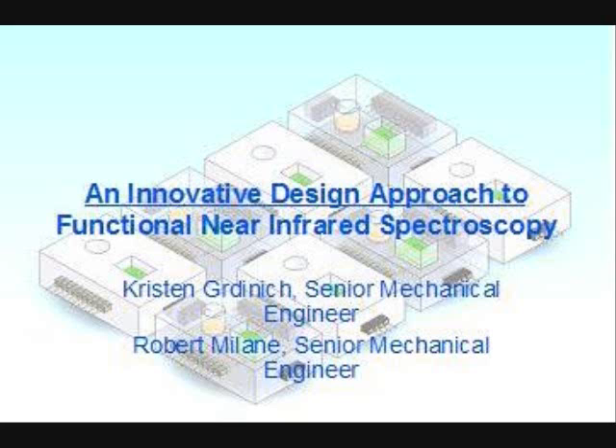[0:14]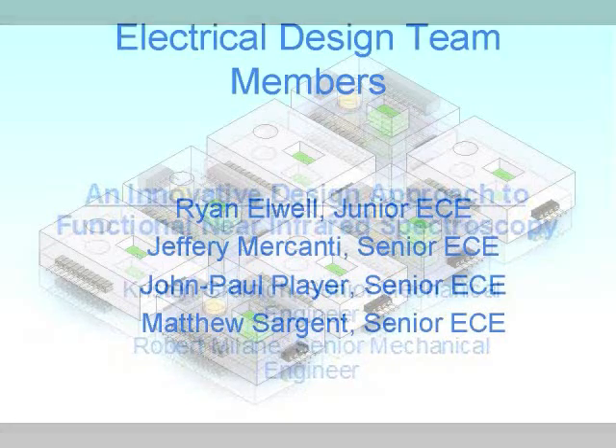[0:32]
This video was created to present our junior-senior clinical design project at Rowan University. My name is Robert Mullane. I am a senior mechanical engineer. And I am Kristen Grinich, also a senior mechanical engineer at Rowan University. And we are the mechanical design team for the functional near-infrared brain imaging project.
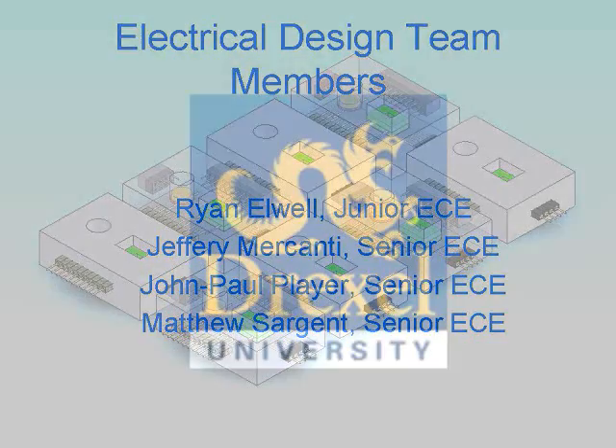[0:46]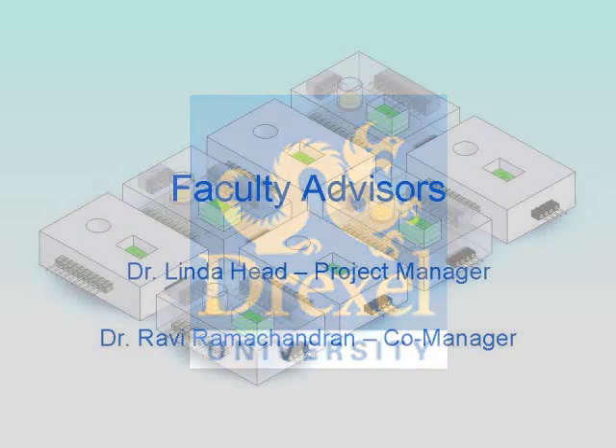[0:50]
Our project was a joint effort with an electrical design team that included Ryan Elwell, junior ECE, and senior electrical and computer engineers Jeffery Mercanti, John Paul Player, and Matthew Sargent. This project was also run in conjunction with a design team from Drexel University. Our faculty project manager is Dr. Linda Head, with co-manager Dr.
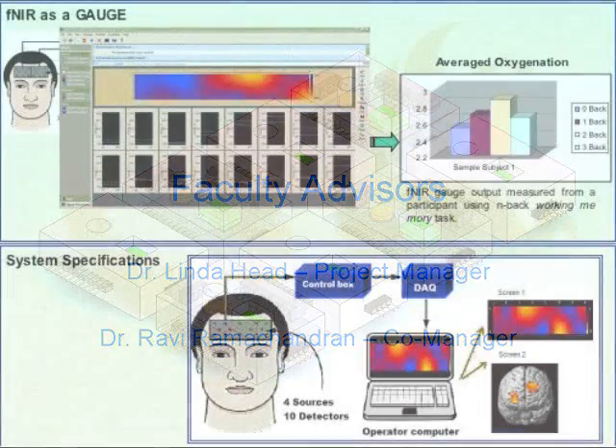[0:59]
Ravi Ramachandran. The device uses near-infrared light LEDs to shine light through the skull and into the brain while the test subject is actively involved in cognitive activity. The light is absorbed by any hemoglobin present in the brain, and the light that is not absorbed is reflected back to the receiver diodes. This signal can be translated by software into an image that shows the amount of hemoglobin in the brain.
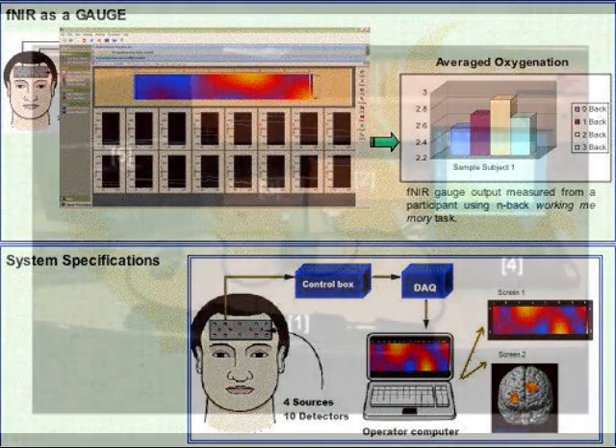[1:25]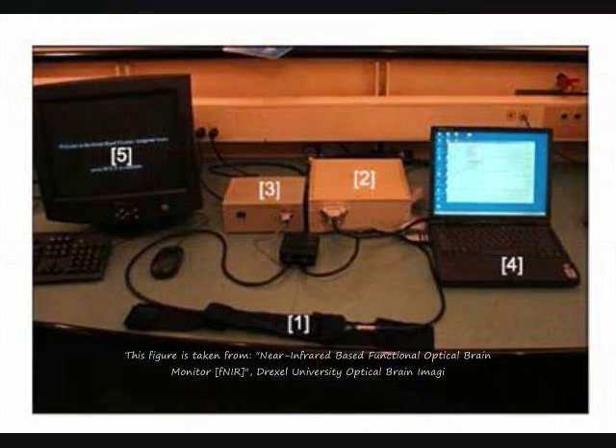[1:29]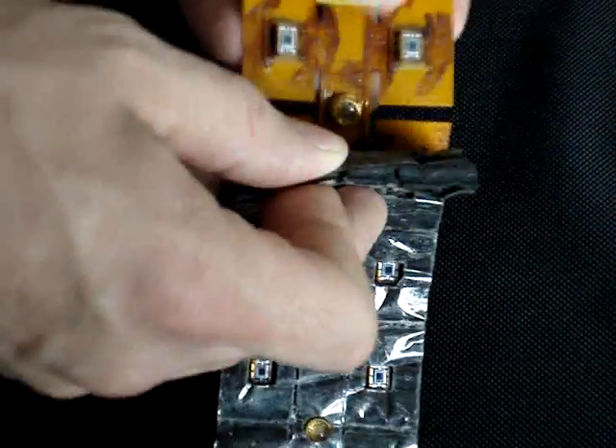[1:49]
Currently, this technology is used by the government to help determine how soldiers handle different stressful situations. The presently available device requires that the test subject be seated in front of a computer while testing takes place. This is because the headgear has to be directly connected to the computer, as represented by the number 1 in the setup shown. The headgear apparatus is hardwired as one unit, as seen here, after removing the protective foam layer.
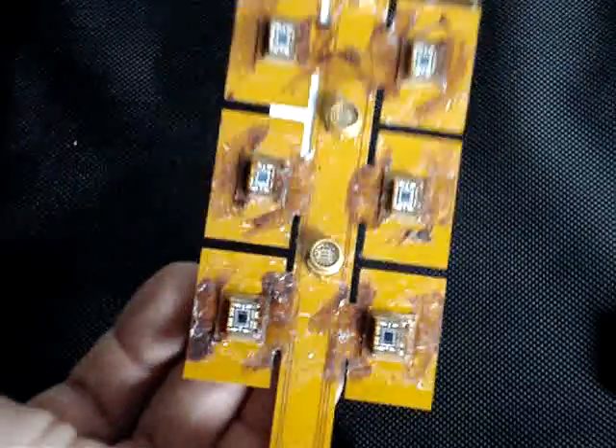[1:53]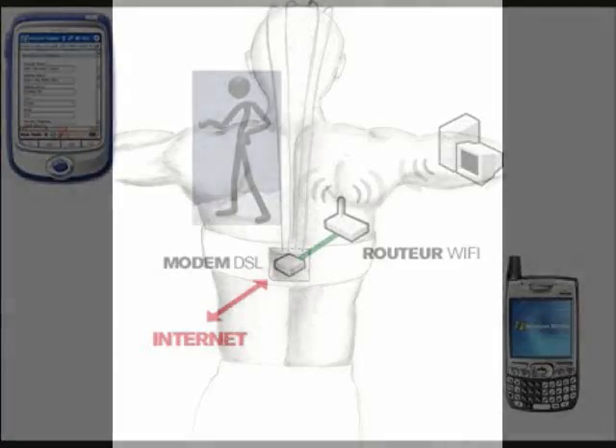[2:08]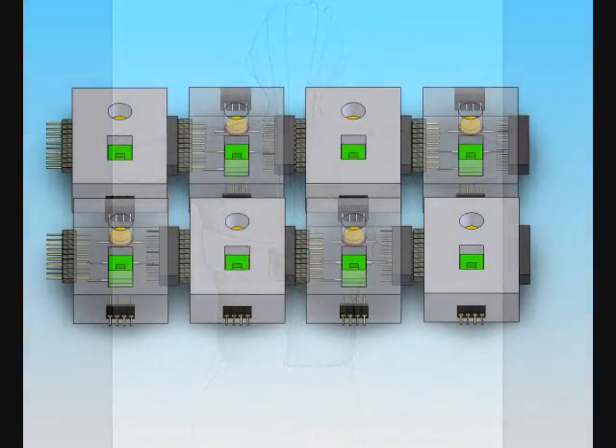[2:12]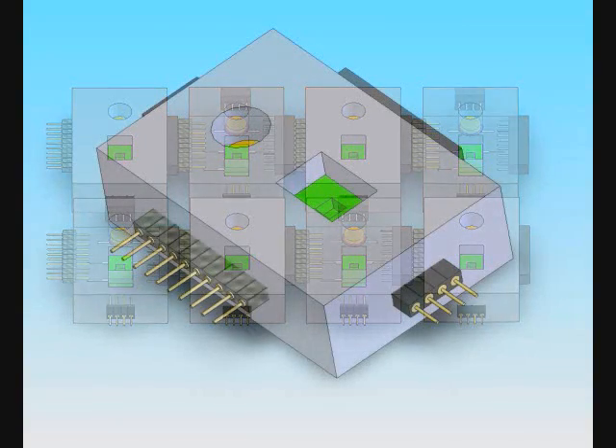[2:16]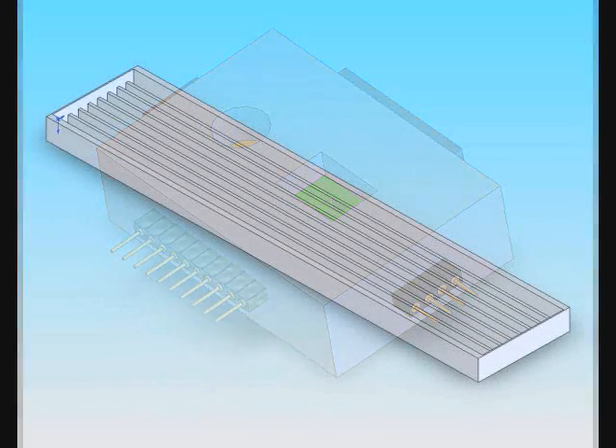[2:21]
The main objective of this project is to make an improved device that is mobile to allow a test subject to complete physical as well as cognitive activities while wearing the unit. The second major goal was to make the unit modular to allow for different size subjects as well as different LED and diode configurations. Our first design was to be made using a mold that would create slots in a
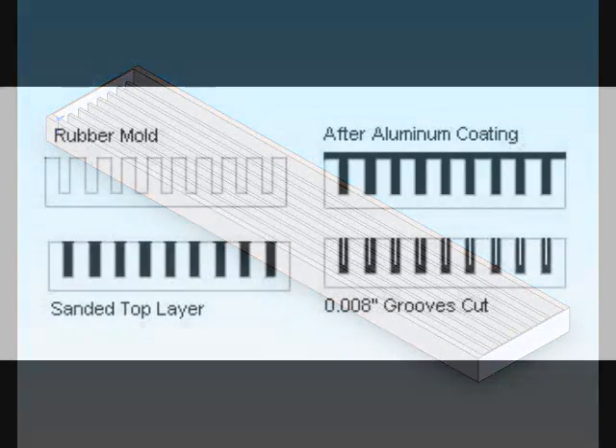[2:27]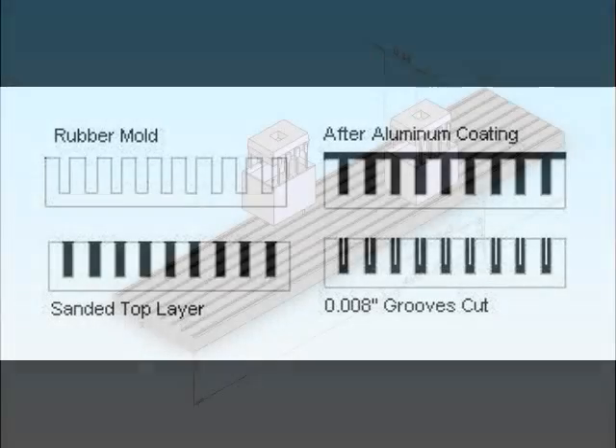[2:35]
rubber housing. The slots would then have metal evaporated in them, and small grooves would be cut into the metal using a 0.008-inch jeweler saw. The diodes and LEDs would then be put in small rubber boots to block ambient light and then could be placed anywhere on the slotted housing.
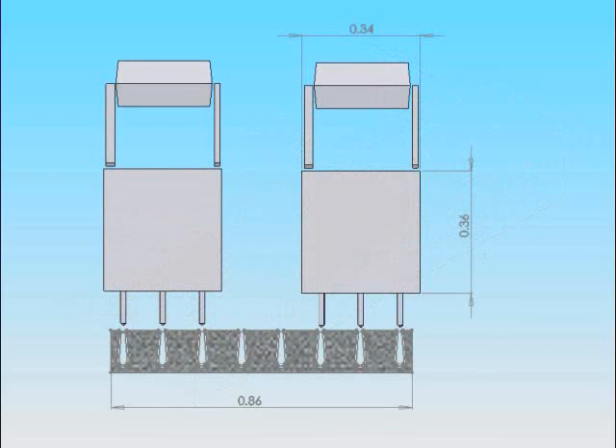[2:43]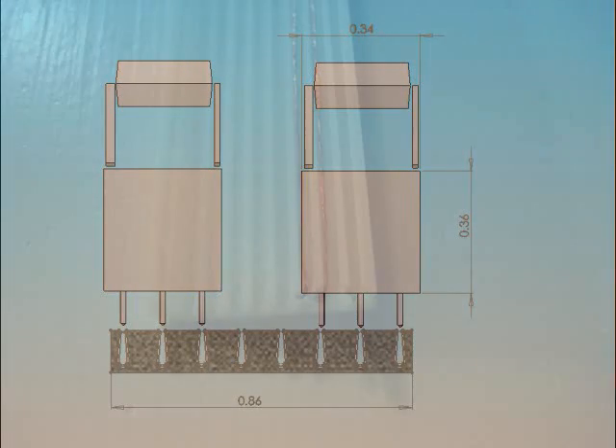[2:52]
The aspect ratio proved to be too small to allow for metal to be evaporated into the grooves, so we needed to evaluate different alternatives. One idea was to use wire embedded into the rubber during the molding process, but this configuration proved to have excess electrical noise during the testing stage and was also scrapped.
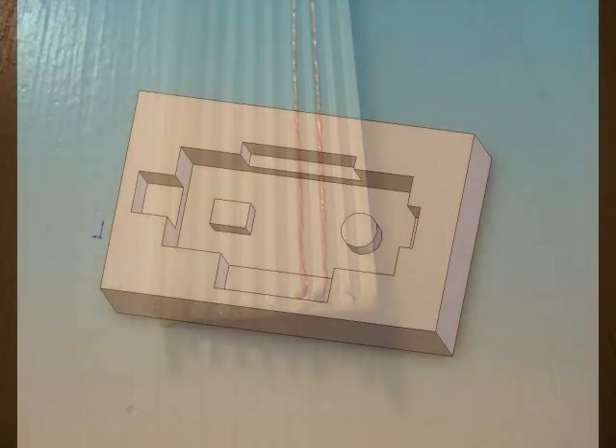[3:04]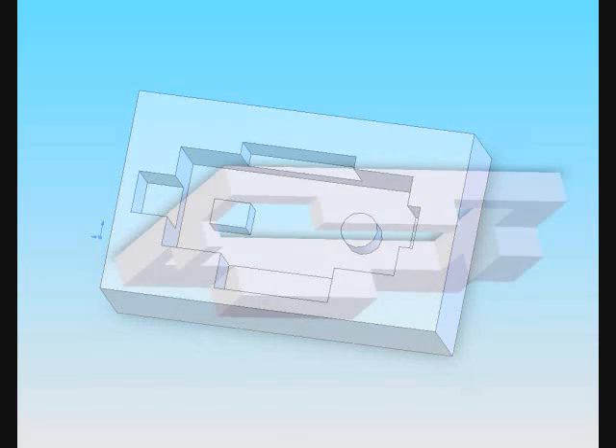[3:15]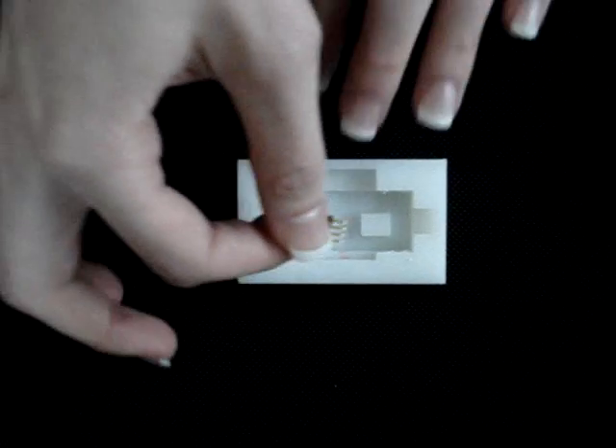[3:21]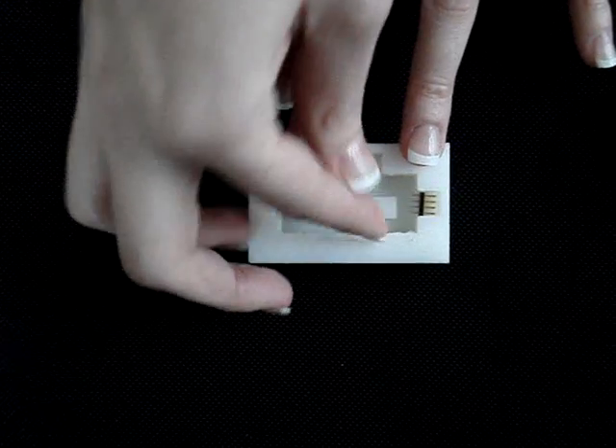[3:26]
After some team brainstorming, it was decided that we would create a mold, shown here from SolidWorks, that would house one LED and one diode, and would be wired to 4 connectors, 2 male and 2 female. This would allow for multiple configurations, quick setup, low or no electrical noise, and less costly repair.
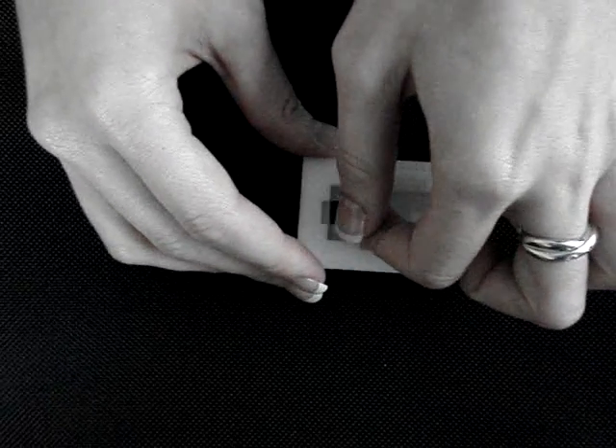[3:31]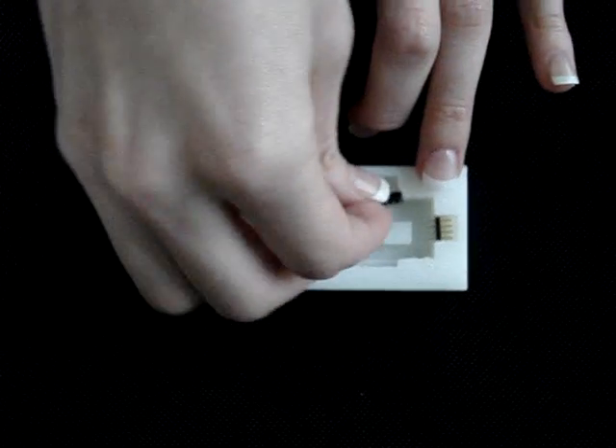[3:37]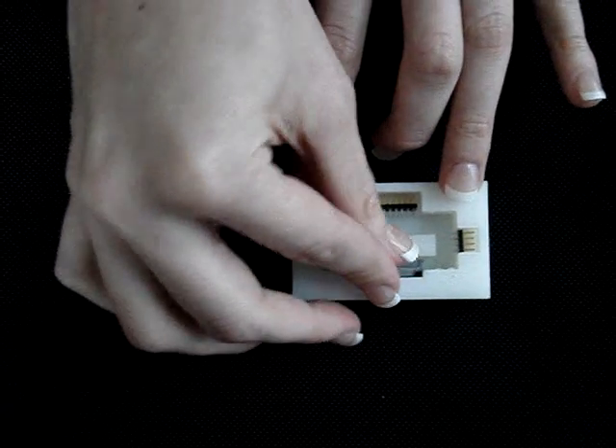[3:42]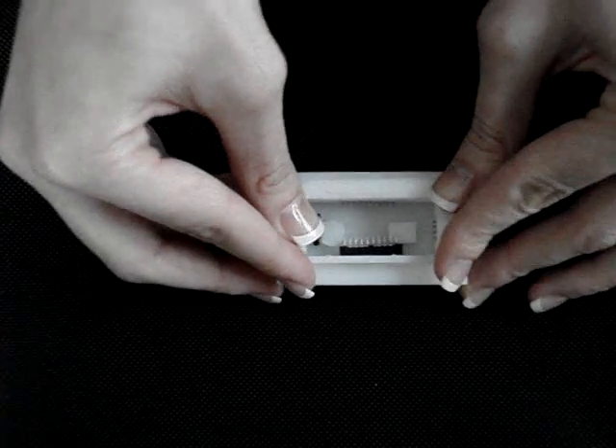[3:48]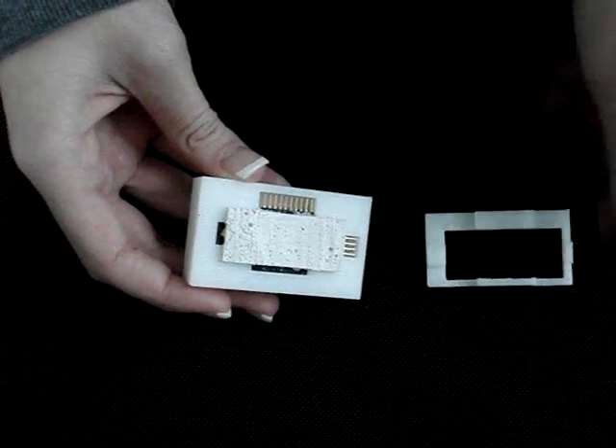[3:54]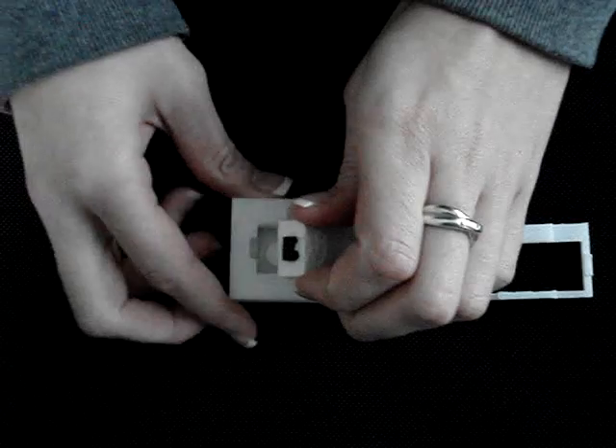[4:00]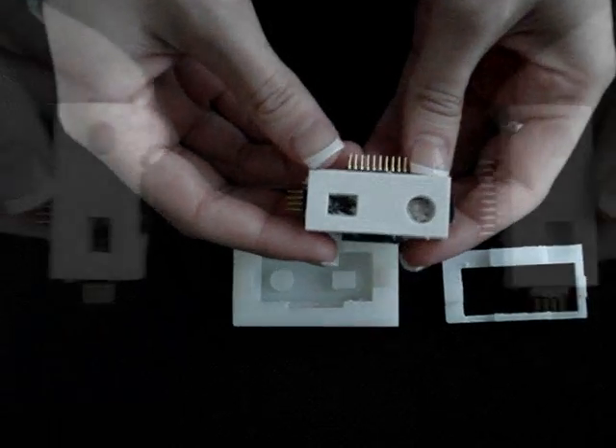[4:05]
You can see here how each connector is inserted, and then the top is put in place to hold everything still while the rubber that will be injected into the mold has time to set. Once the rubber is set completely, the unit can be removed from the mold. It can be seen here, using 2 prototype parts, how they could be connected to form different configurations.
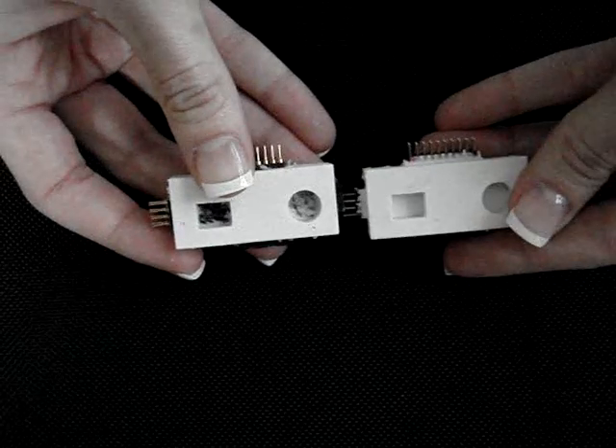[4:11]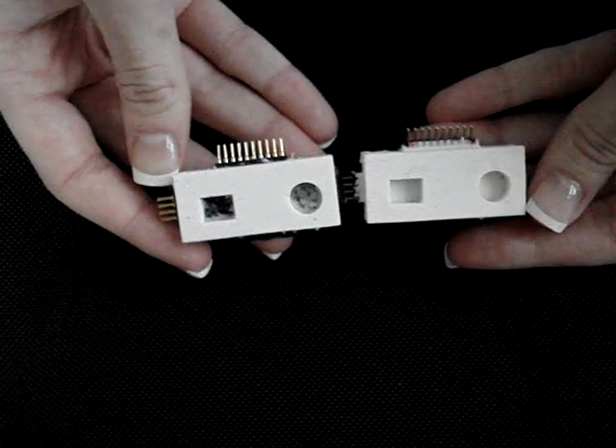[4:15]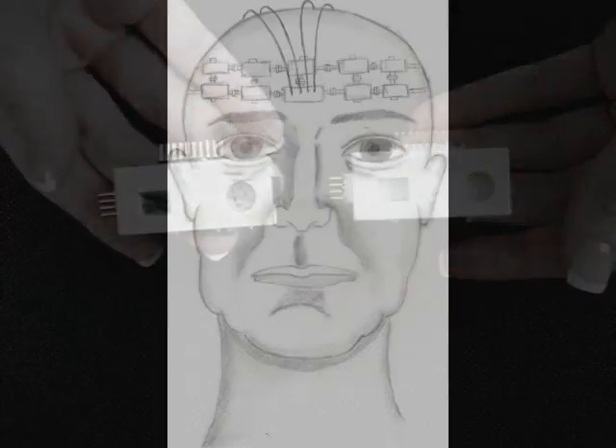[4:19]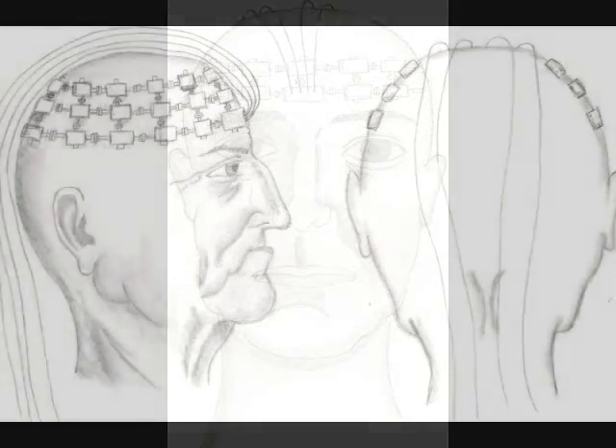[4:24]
From these artistic renderings, you can see how, theoretically, any size device can be made, even one that would cover the entire head.
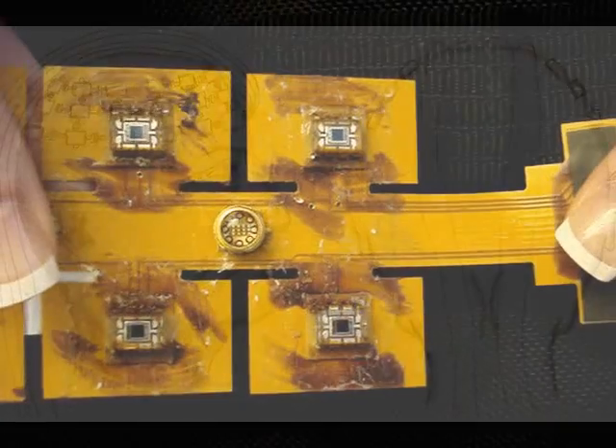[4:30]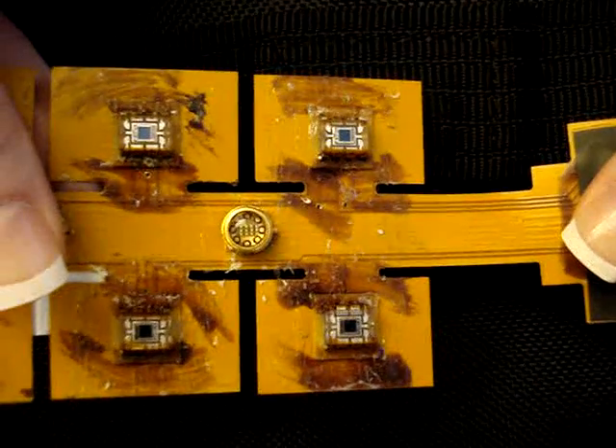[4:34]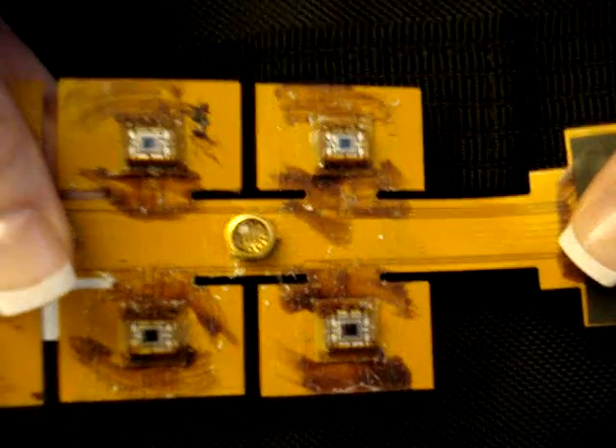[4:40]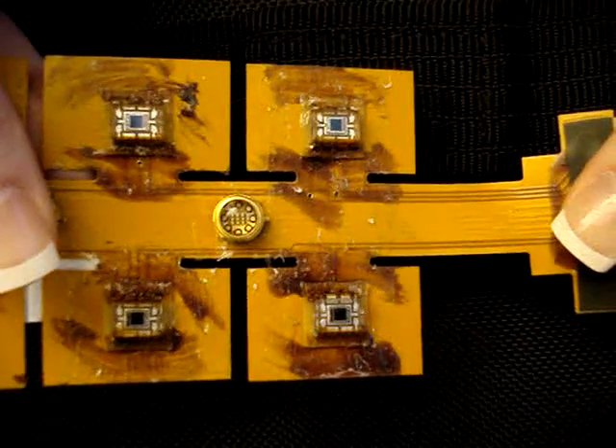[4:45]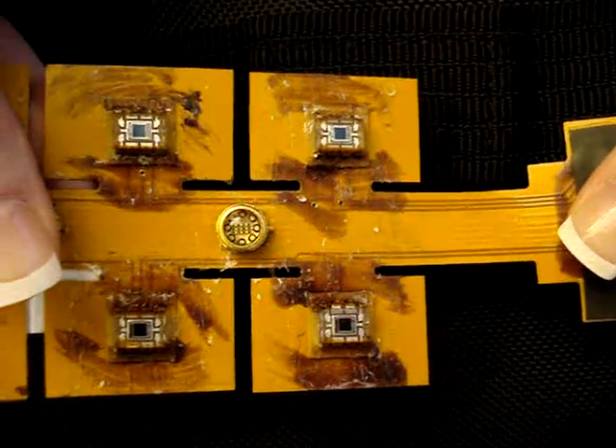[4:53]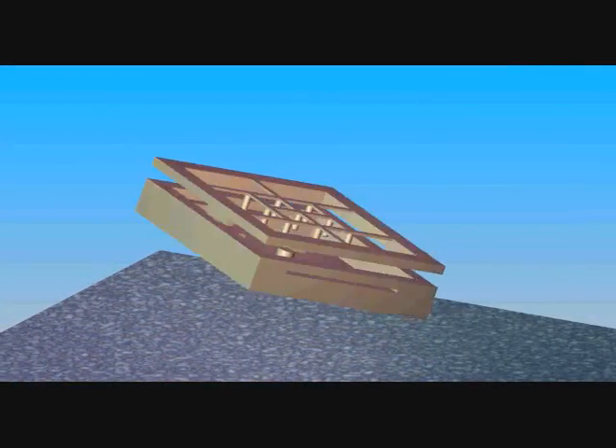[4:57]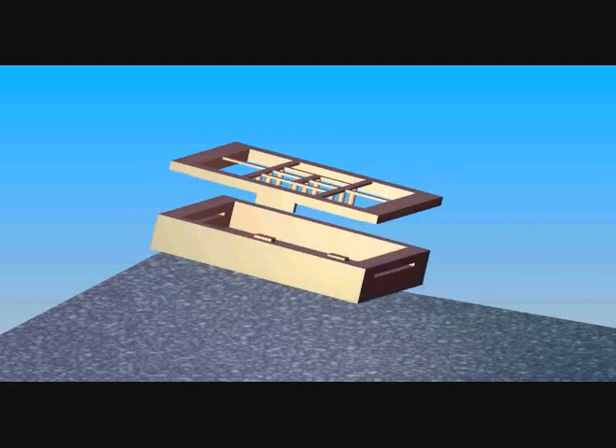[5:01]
At this point in the project, we were contacted by Drexel and told they were designing a single unit consisting of one LED and 4 diodes positioned with the LED in the center and each diode 3 centimeters from the LED in a square configuration. A hardwired version is seen here. After putting the single prototype on hold, we changed gears and created a design in SolidWorks along the same lines, only fitting the new requirements.
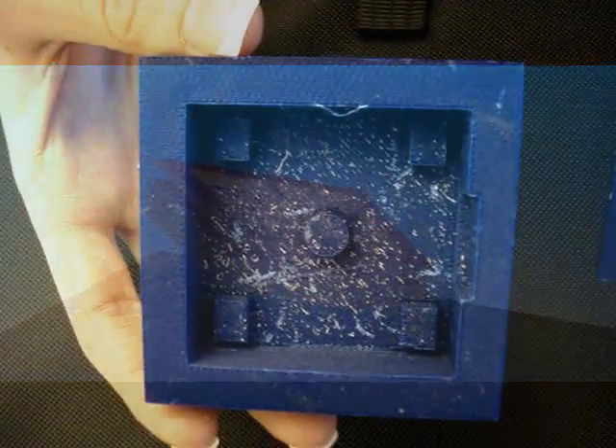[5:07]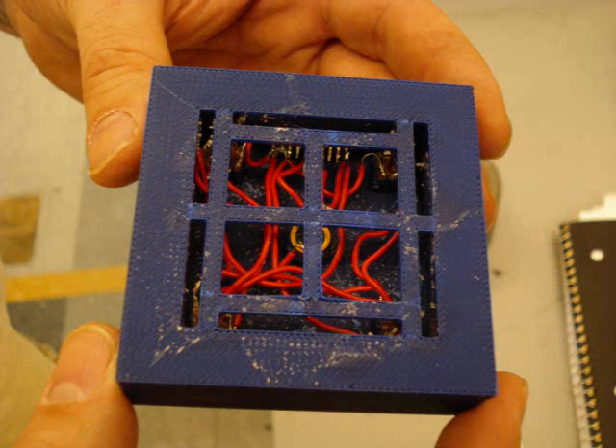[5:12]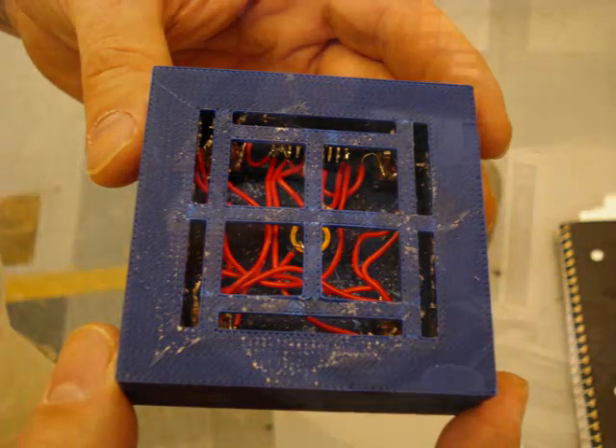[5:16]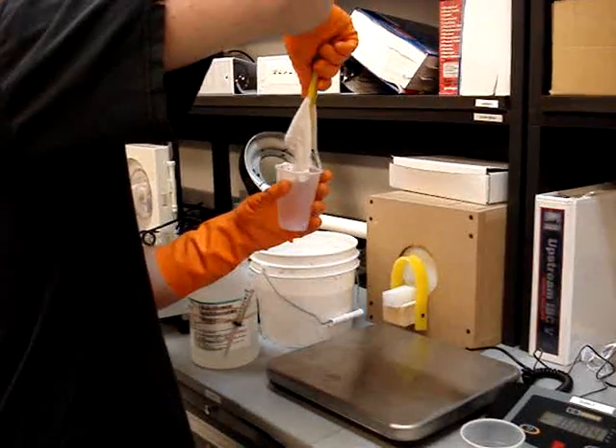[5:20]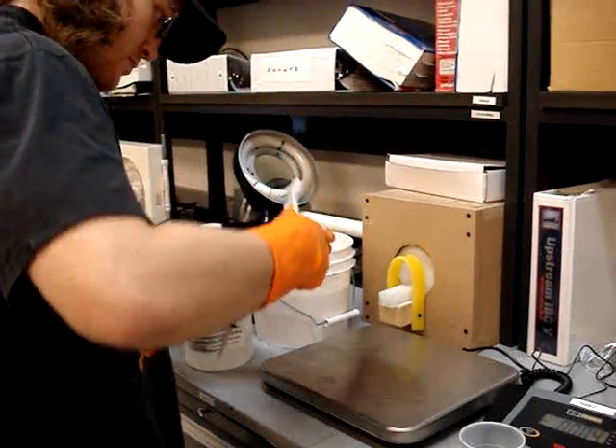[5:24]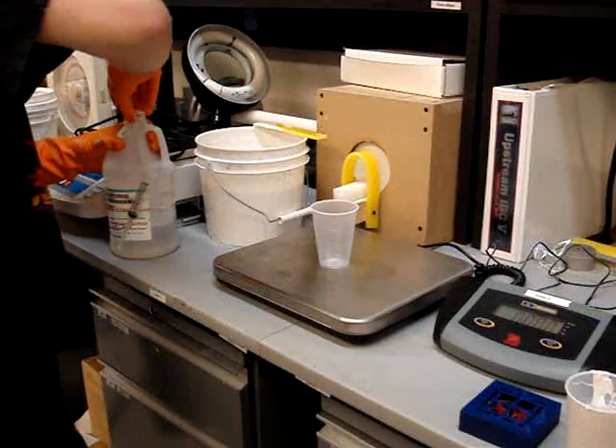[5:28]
This is a rendering of the design we created. After the mold was created using an ABS modeler, four diodes and one centrally located LED were wired on a 20-pin female connector and fitted into the mold. With the help of Tyler, a junior mechanical engineering student working on the Magnetorheological Elastomer Clinic project, we mixed up a batch of rubber compound to exact specifications and filled our new mold.
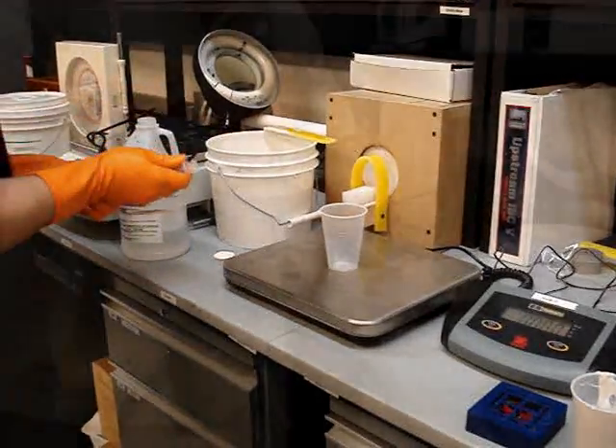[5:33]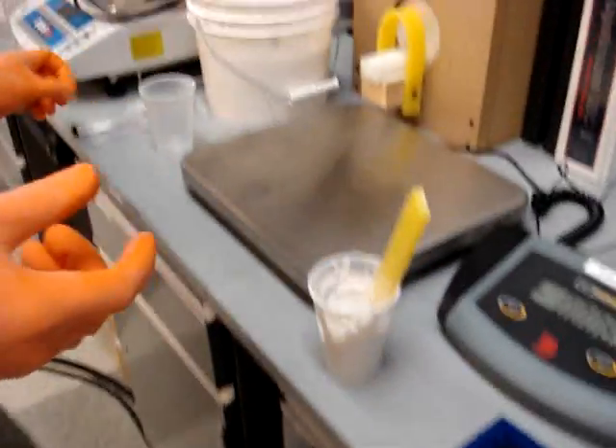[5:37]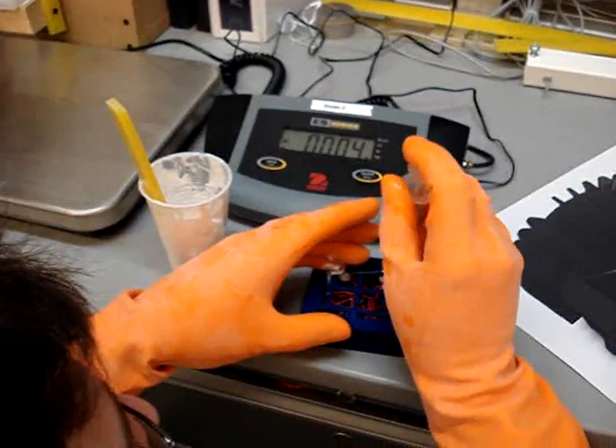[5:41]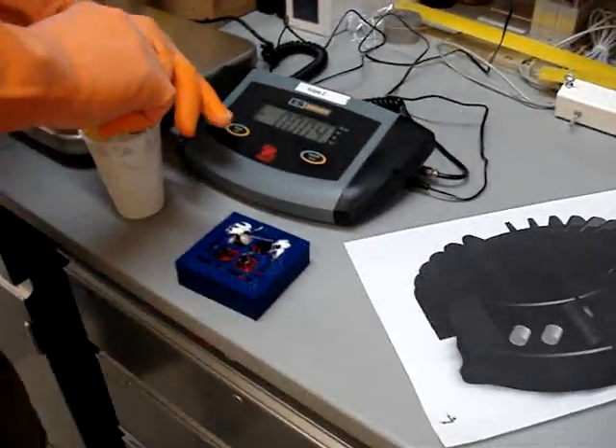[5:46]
It can be seen here how the rubber is mixed with a catalyst to promote hardening. The rubber and catalyst are mixed thoroughly, and then by using a syringe, the compound is injected into the mold. The use of the syringe allows for a uniform flow through the nest of wires and into the small corners of the mold.
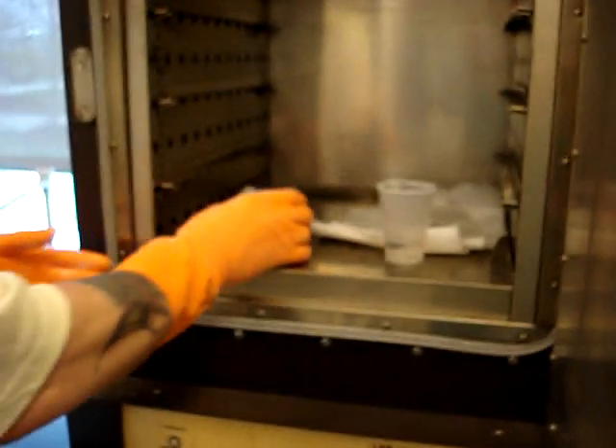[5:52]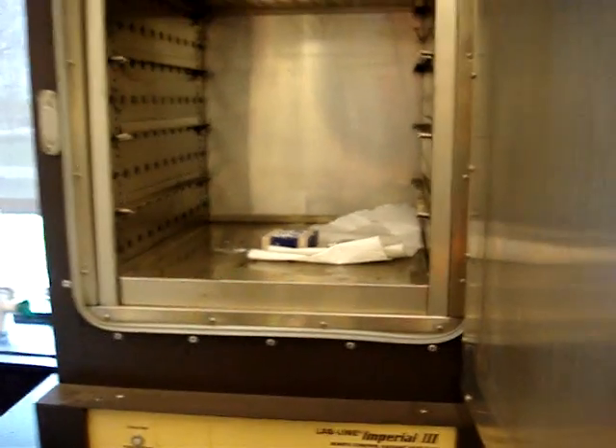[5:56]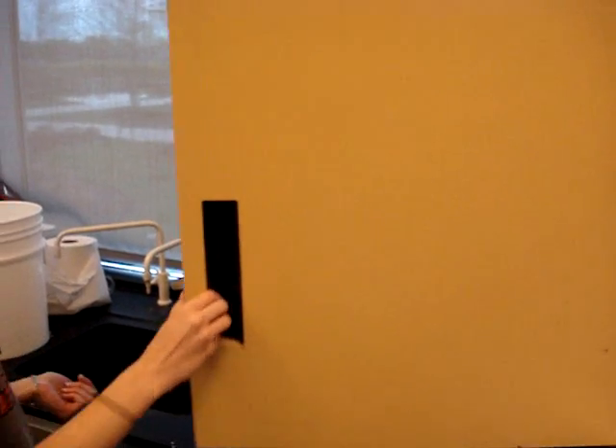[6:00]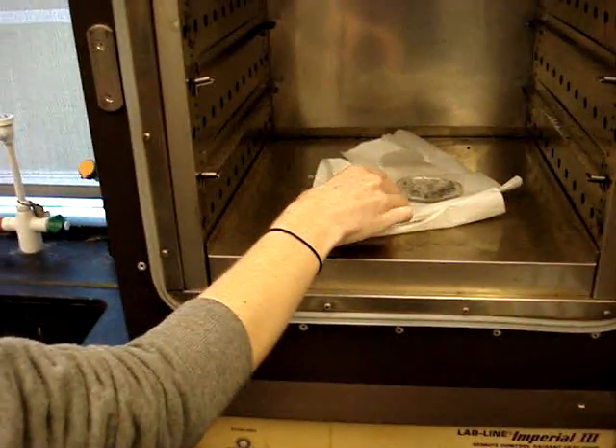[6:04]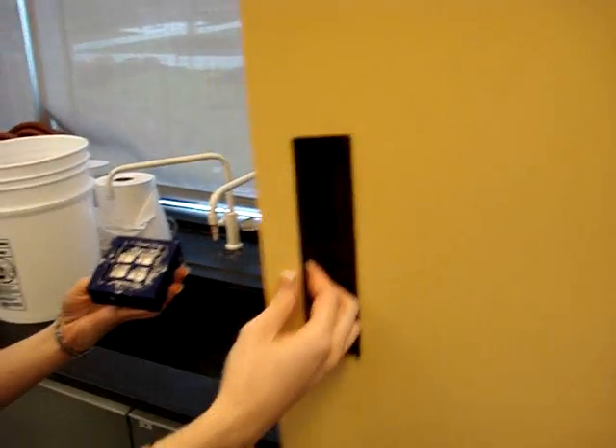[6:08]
The mold was then placed in an oven at 121 degrees Celsius for at least 24 hours to be able to harden to a solid rubber consistency. After curing, the solid unit is removed from the oven and extracted from the casing. The completed unit is now ready to be handed over to the electrical team.
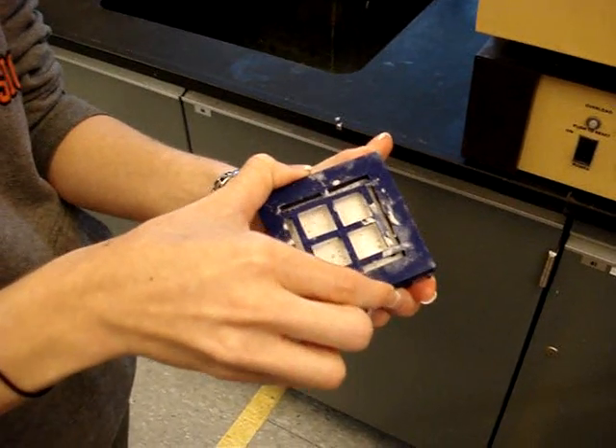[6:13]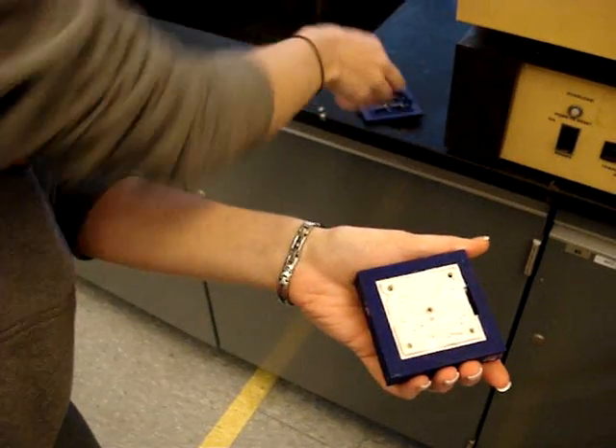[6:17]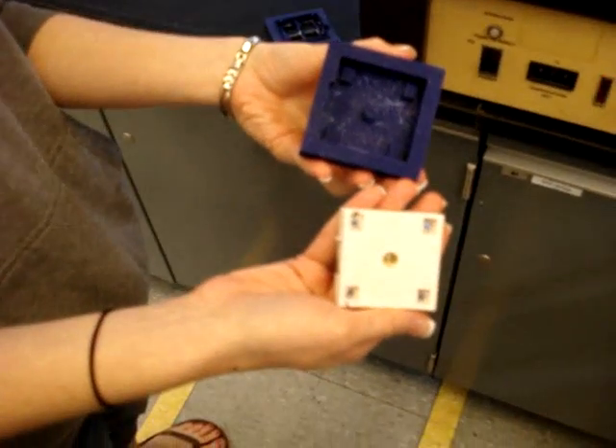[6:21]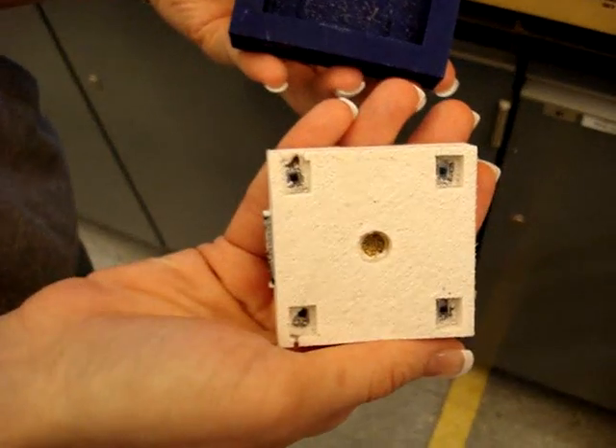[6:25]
The part seen here should be fully functioning and, after being electrically tested, can be attached to a bench setup as seen earlier to verify its functionality. After it has been certified, the next step in the process can occur.
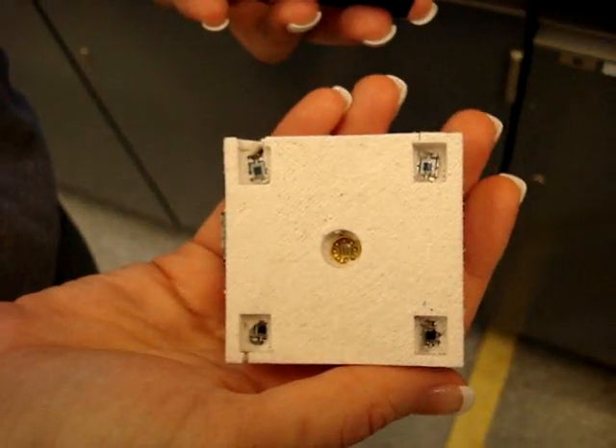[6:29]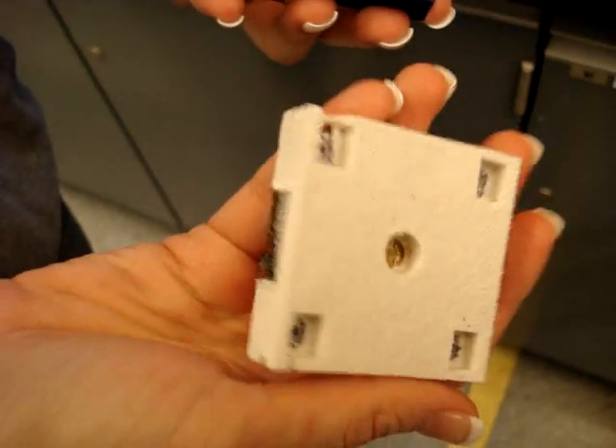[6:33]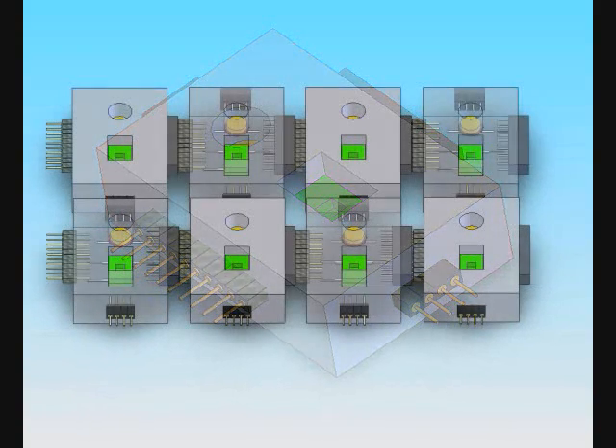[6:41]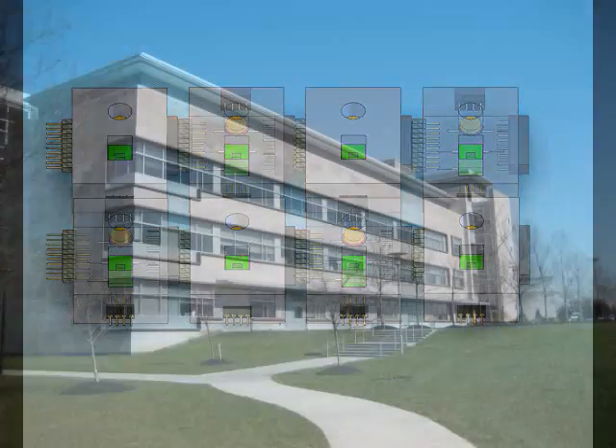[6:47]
The future of this project, with graduate students in the summer and a new group of undergrads next fall, we hope to have this unit tested and certified and take the next step toward making the device mobile. We would also like to continue with the electrical design team to have a modular unit that can be connected with as many or as little parts as is necessary.